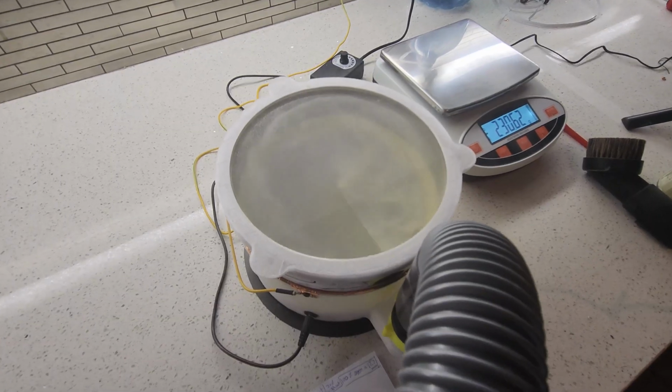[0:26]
Lab equipment is expensive, often way too expensive. What if I told you that one of the most powerful particle size analysis tools can be 3D printed for a fraction of its market cost?
Today I'm showcasing my Airjet Sieve design, an affordable and accessible way to classify and analyze fine powders in the lab. Whether you've never heard of particle size analysis or you're actively searching for a solution, this video is a great example of looking at an old product through the lens of a new manufacturing technique.
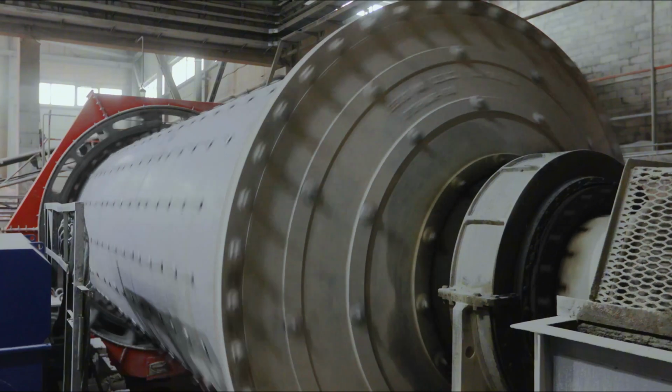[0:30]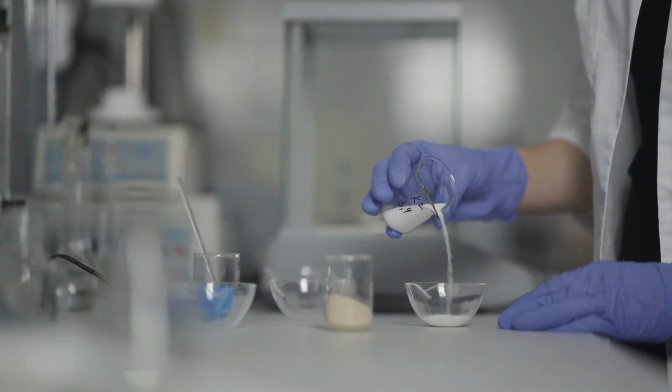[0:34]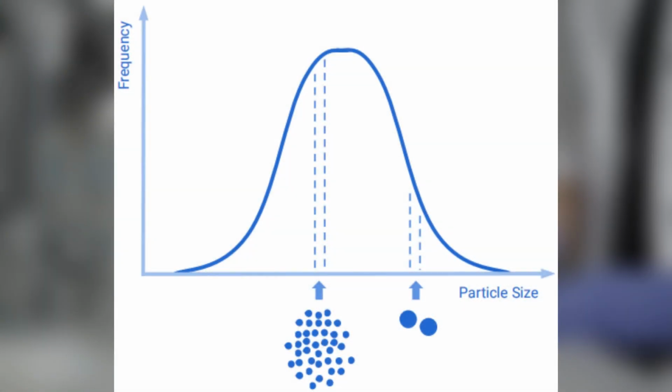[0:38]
So what is particle size analysis? Whenever a material is ground into a powder, it doesn't break down into uniform particles. Instead, grinding produces a range of particle sizes, from larger fragments to fine dust. Particle size analysis is the process of measuring the size distribution in the lab to ensure that the final product
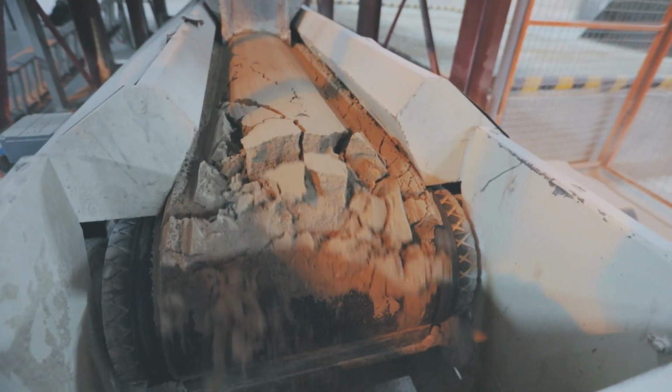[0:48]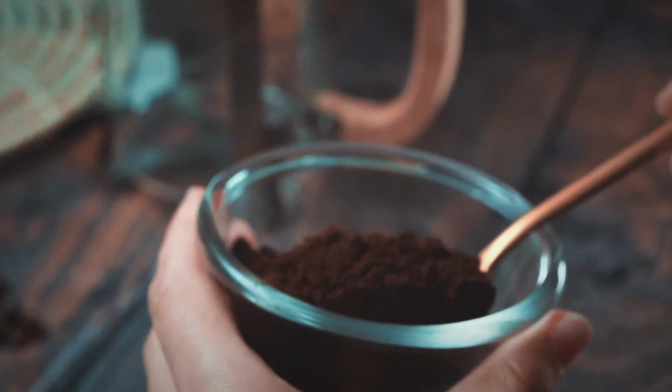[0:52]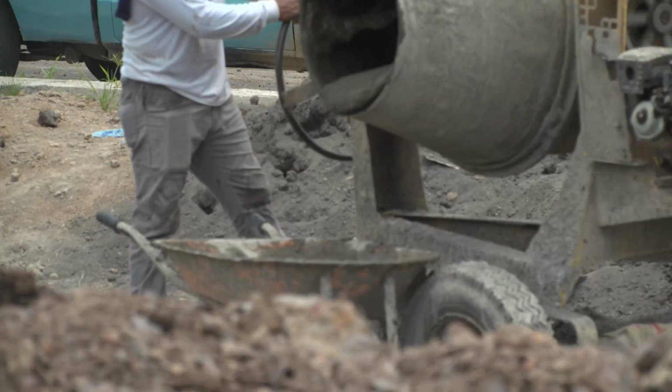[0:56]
meets specific requirements. A powder's particle size and variation significantly impacts the material's overall performance. It ensures that every cup of instant coffee you've ever had tasted the way it did, and that every bag of cement will provide the same performance.
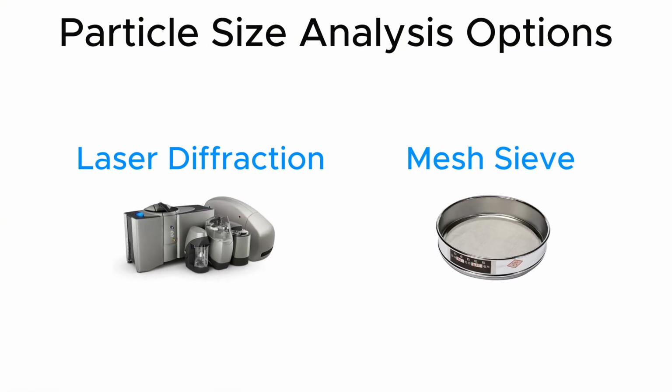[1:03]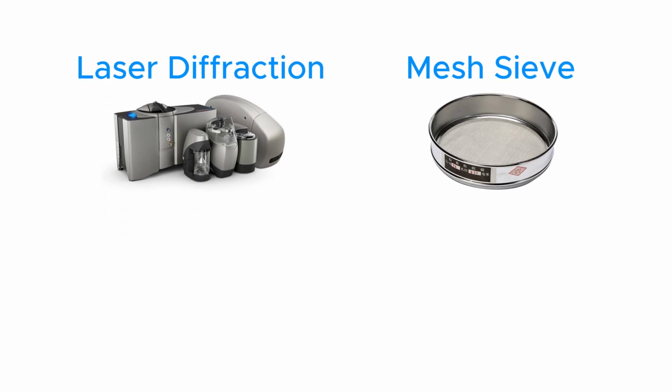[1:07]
There are two main approaches to particle size analysis: sieve-based methods and laser diffraction analysis. Laser diffraction instruments are highly accurate and can measure a wide range of particle sizes, but they're extremely expensive compared to sieve-based methods, ranging from $30,000 to $100,000. Sieve-based methods provide a more affordable and widely used alternative.
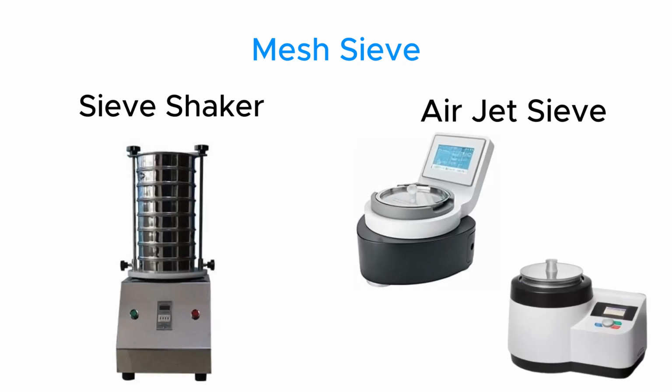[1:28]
Within sieve-based methods, there are two primary options: vibratory sieving and airjet sieving. Vibratory sieves rely on mechanical shaking to pass particles through a stack of progressively finer mesh sieves, making them well suited for coarser materials typically above 50 microns. For powders that include ultra-fine particles, they tend to clog the mesh, reducing efficiency and resulting in inaccurate results.
Airjet sieves, on the other hand, use a high-velocity airstream to fluidize and separate particles, making them ideal for very fine powders, even down to a few microns, while preventing clogging. Traditional airjet sieves start at around $10,000, but with my 3D printed design, this technology becomes significantly more accessible for researchers and even small scale manufacturers.
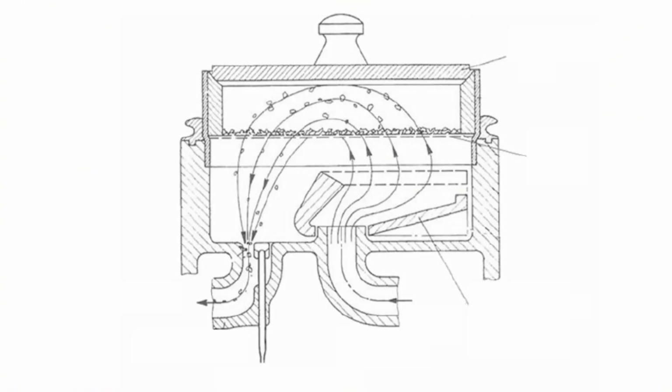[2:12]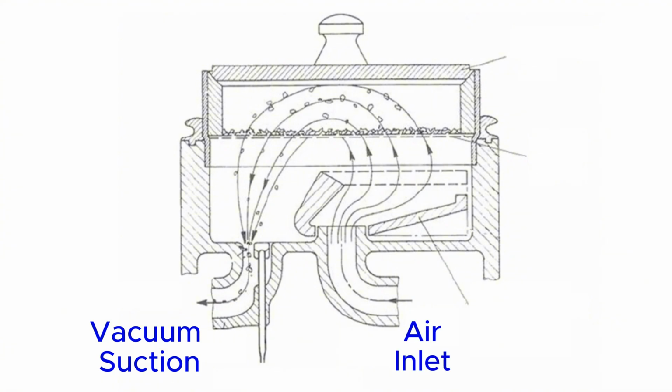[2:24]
Next, let's look at a cross section of an airjet sieve to understand how they work. On one side, you have a vacuum suction port, which hooks up to a vacuum cleaner to provide the driving force that pulls particles smaller than the sieve mesh through it. On the other side, you have the air inlet, where all the air being drawn by the vacuum enters the system. Right above the air inlet, you have the rotating wand.
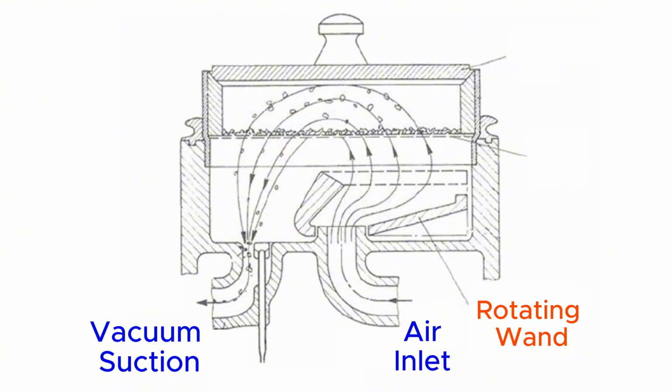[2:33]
The rotating wand works by forcing all the air coming through the inlet into a thin slit, creating an air blade. This air blade is positioned right below the sieve, and as it rotates, it clears up any particles clogging the sieve. It launches the particles at the lid, which breaks down any agglomeration. This gives particles smaller than the mesh multiple opportunities to pass through.
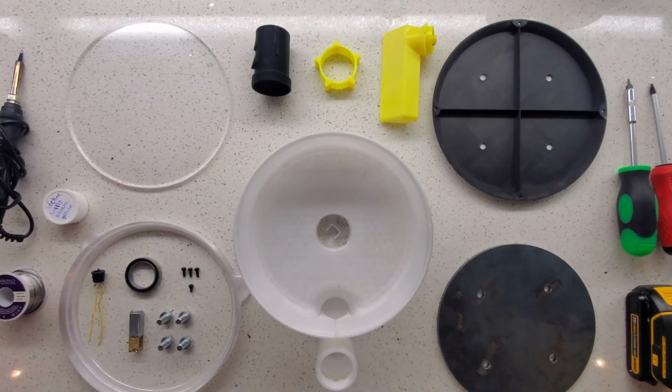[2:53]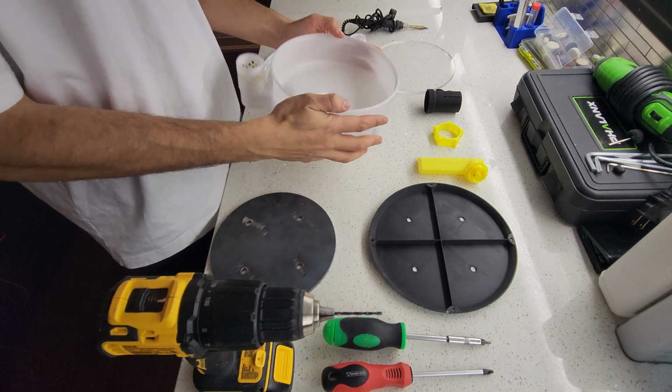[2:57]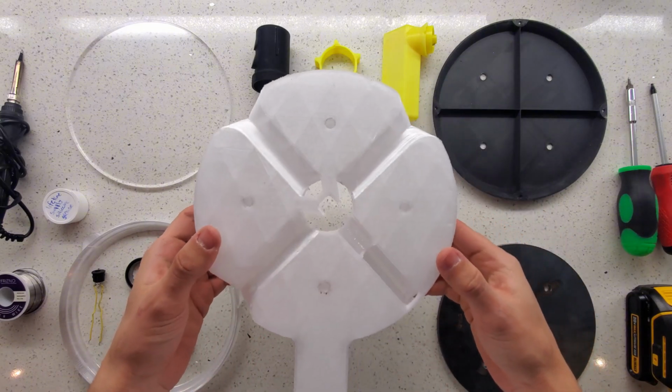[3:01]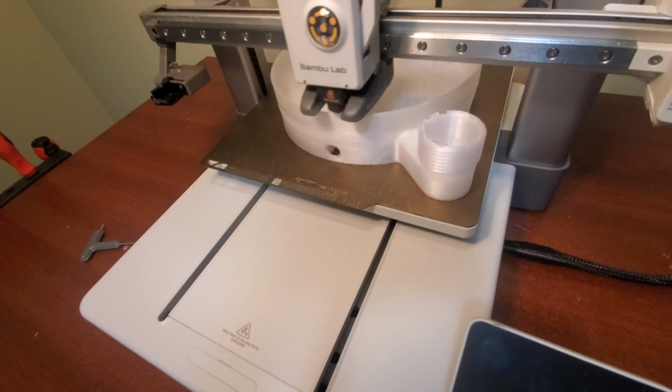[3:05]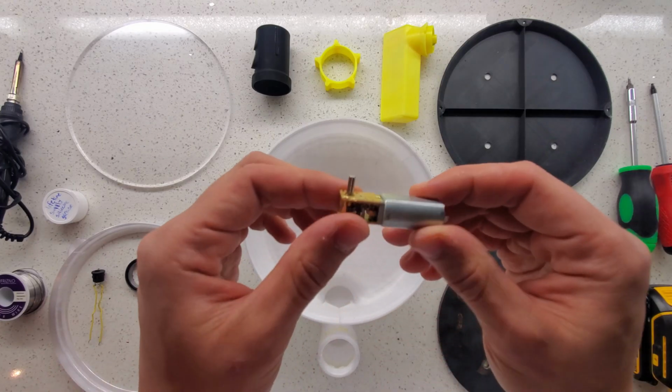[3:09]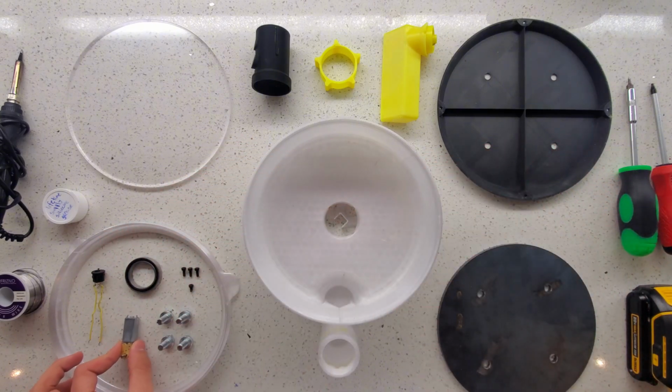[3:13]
Let's get into the build. These are the components and tools I used to make the airjet sieve. This is the main body of the device. I'll get into its features in a second. Most functional components were 3D printed on a hobby level Bambu A1 printer. At the heart of the unit is a micro N50 motor with a gearbox outputting between 50 to 200 RPM. The centering bearing keeps the wand in place.
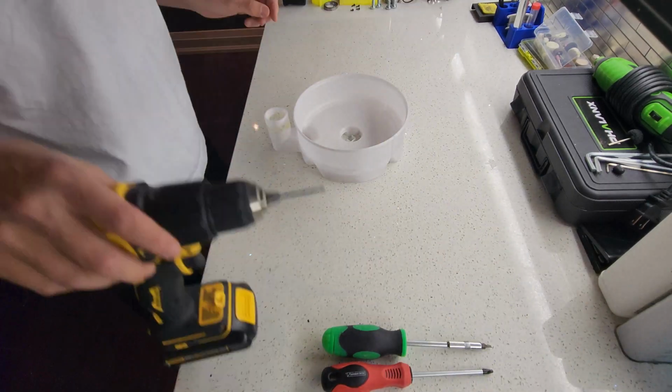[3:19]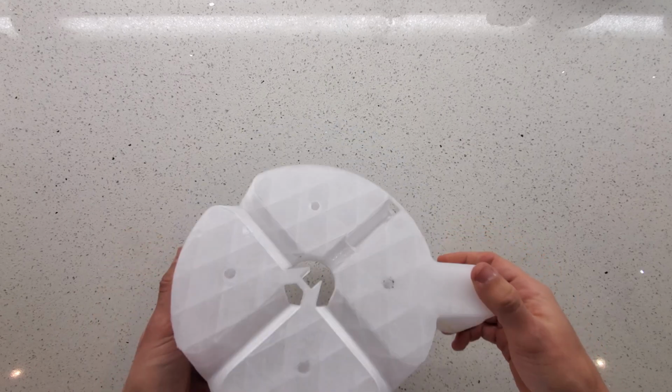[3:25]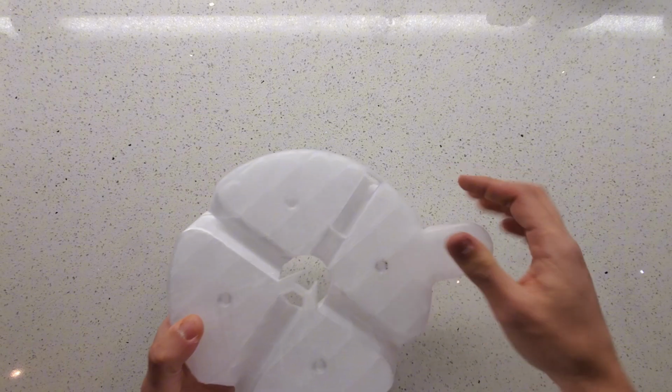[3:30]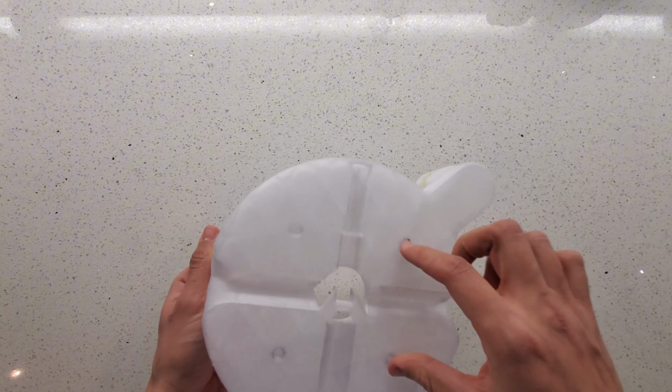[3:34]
Taking a closer look at the main body of the unit, you'll notice it has many features on the bottom side. It was designed to be printed without any support material. This section keeps the motor in place with a channel leading to an electrical port. These four threaded holes accommodate M8 bolts that keep the base on, securing the motor and its wiring.
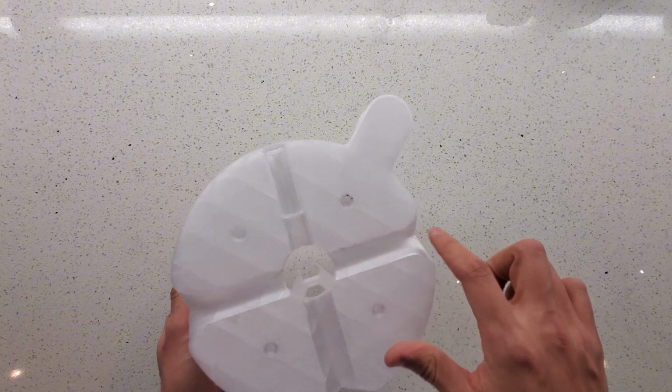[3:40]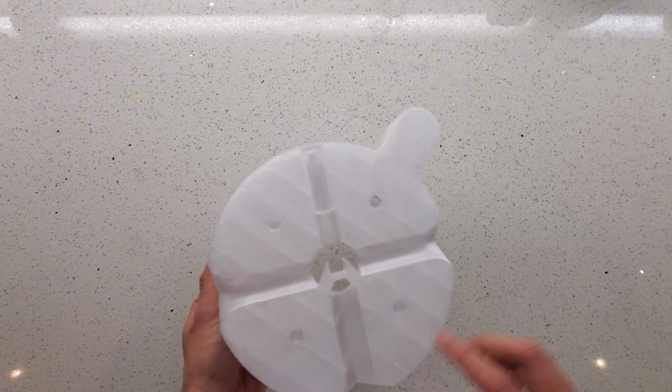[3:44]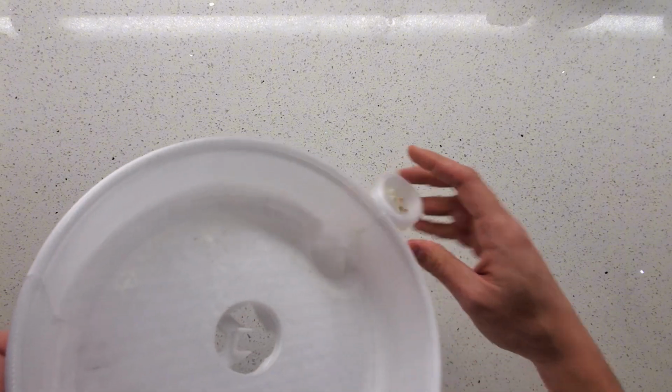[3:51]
These three ports are all air inlet ports. Instead of making one large inlet port, I divided the area into three to reduce the unit's height and required material. On the outside here is a vacuum port with some bypass holes. I'll talk about that in a bit.
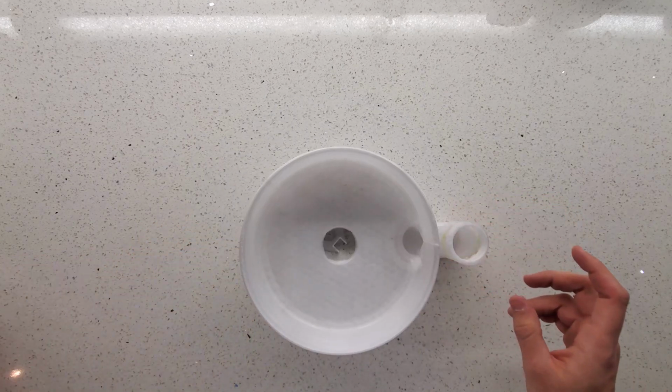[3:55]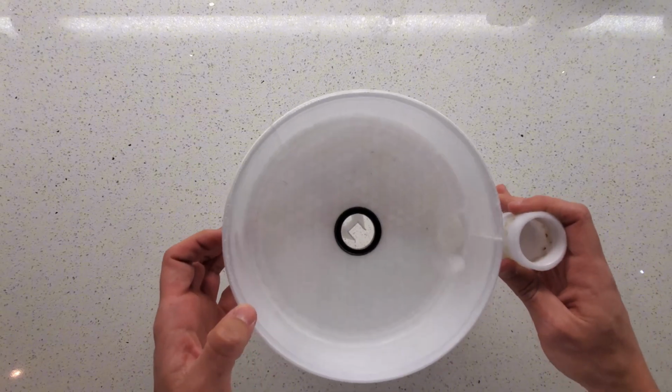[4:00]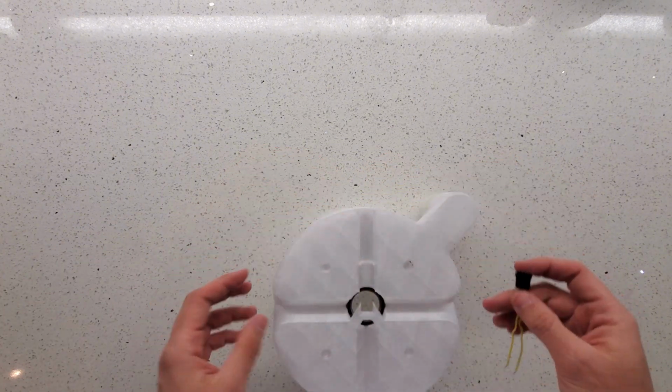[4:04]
I begin the assembly by popping the bearing into place. Next, I attach the DC power socket with its pre-soldered wires into place.
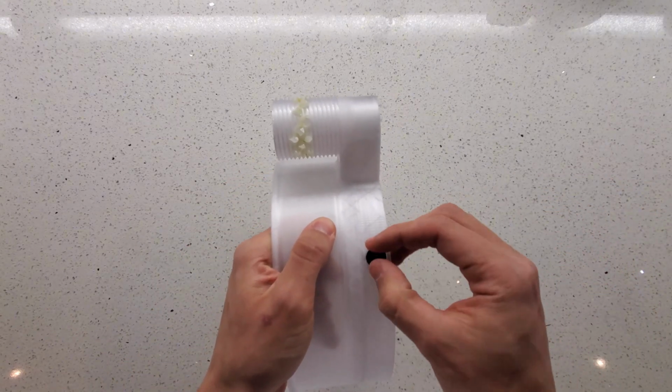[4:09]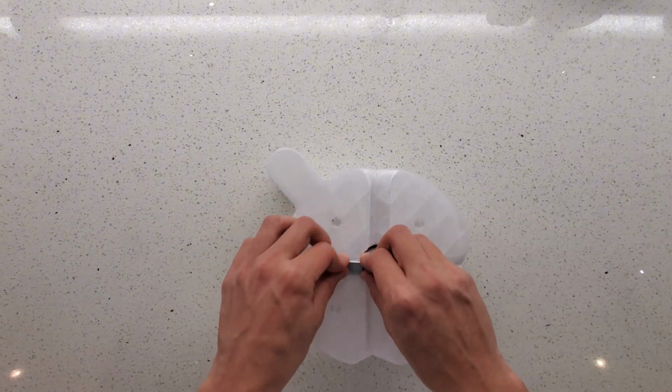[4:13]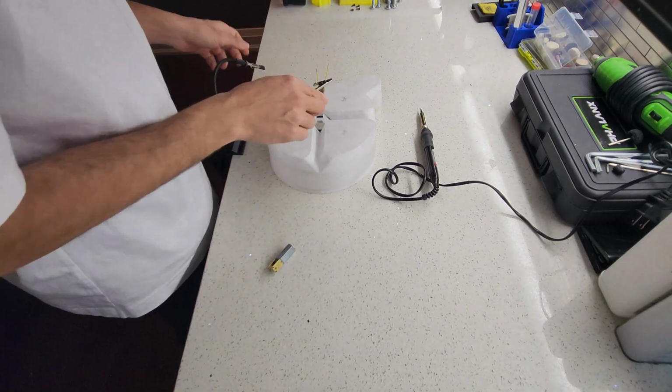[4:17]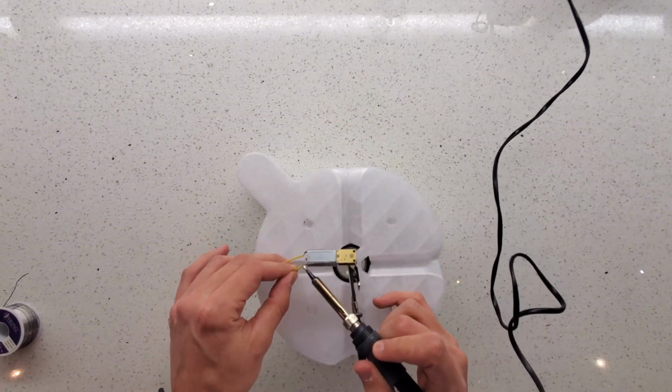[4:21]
The soldering iron was then preheated and the motor's terminals were soldered onto the connector's wires. Polarity doesn't matter here, the motor can spin in either direction.
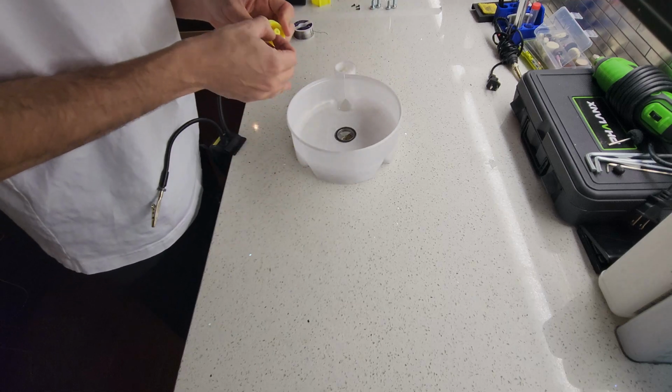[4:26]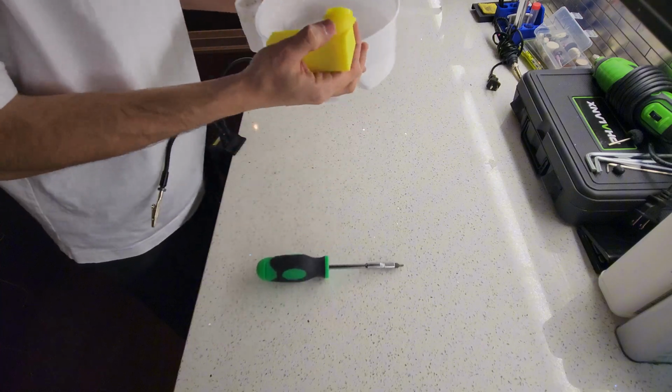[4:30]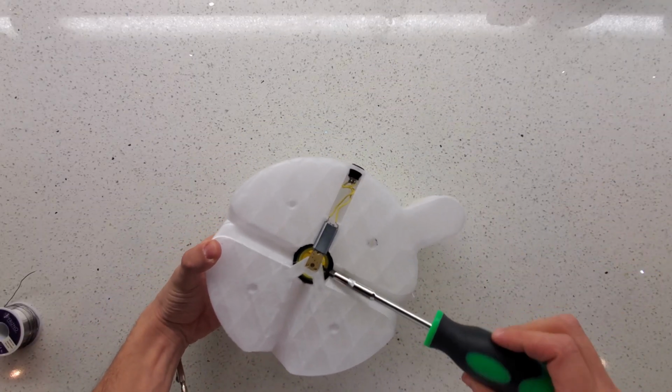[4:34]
After the motor was soldered, the wand is fitted in place from the top, but before I do that, I start threading the set screw that secures the wand to the motor shaft. I tighten the set screw from the bottom, and now I can move on to the base assembly.
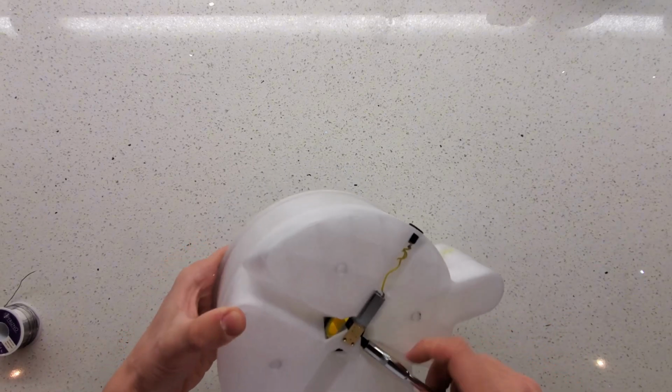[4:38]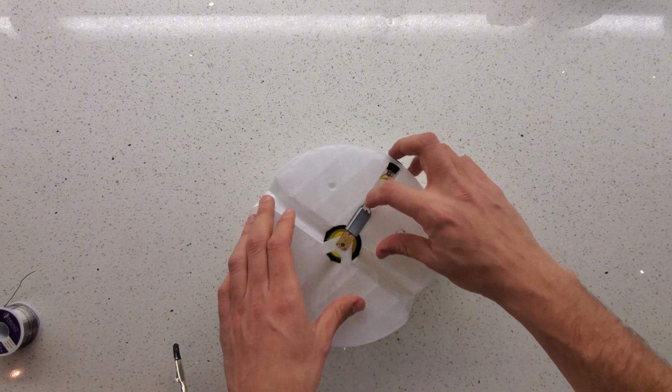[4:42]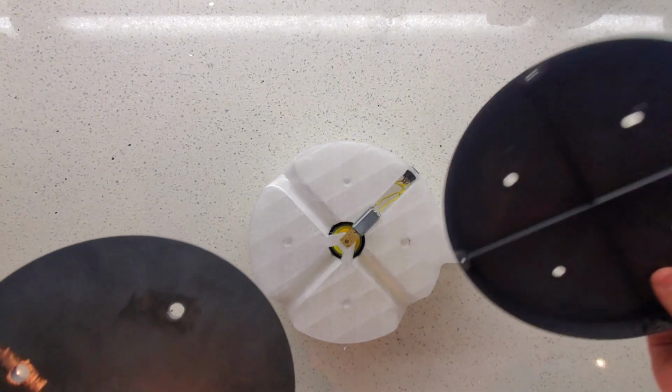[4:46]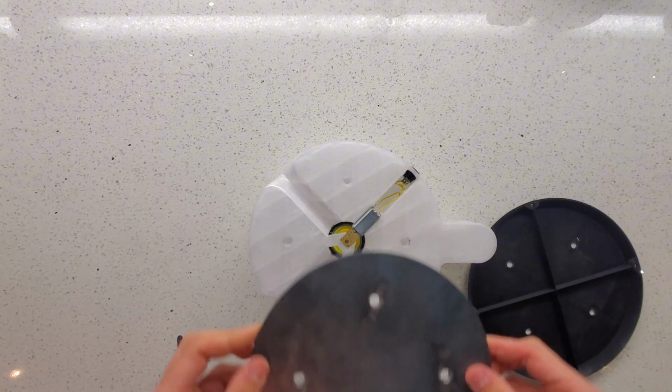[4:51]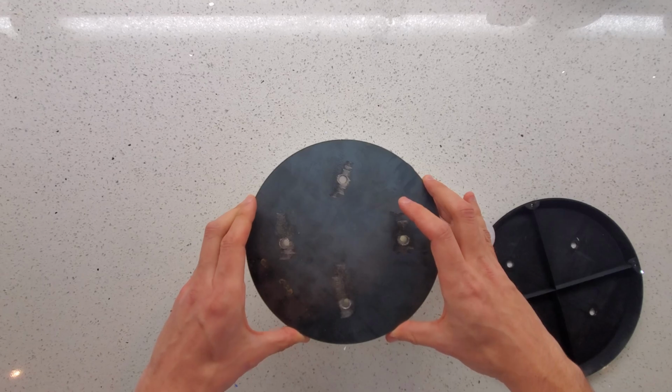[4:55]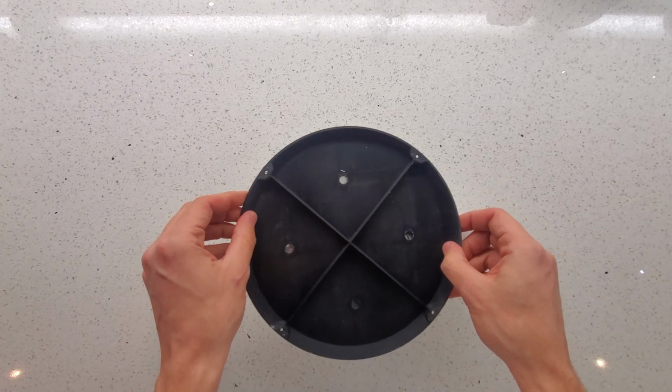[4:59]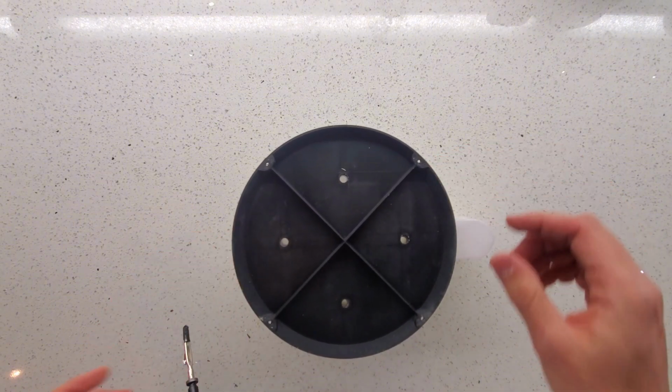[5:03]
For the base, I have two components. On the left is an optional laser cut 5mm sheet of metal. Its purpose is to add weight to the final assembly, keeping it secure on the table with everything moving inside. On the right side is a printed component that can be used as a standalone base and has additional mounting points to secure the unit to a piece of wood or a table if you don't have access to the laser cut component.
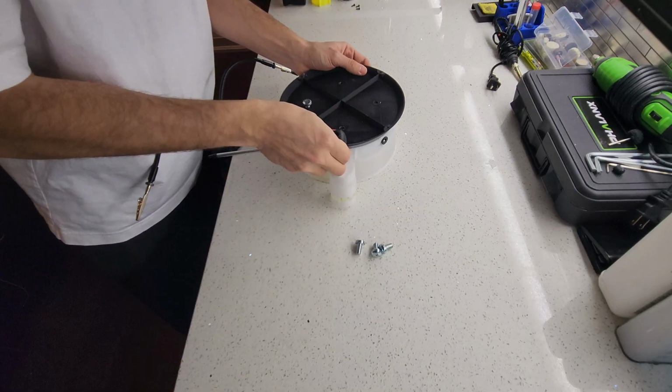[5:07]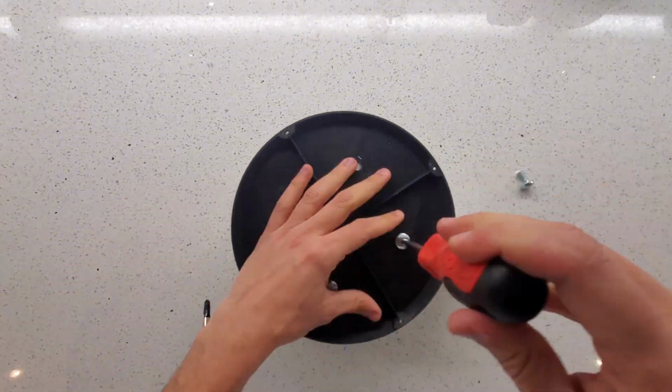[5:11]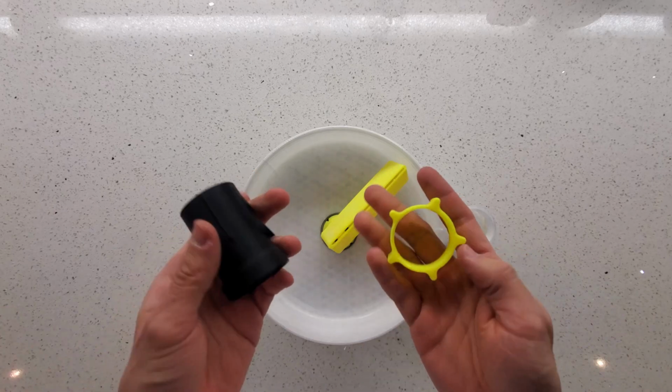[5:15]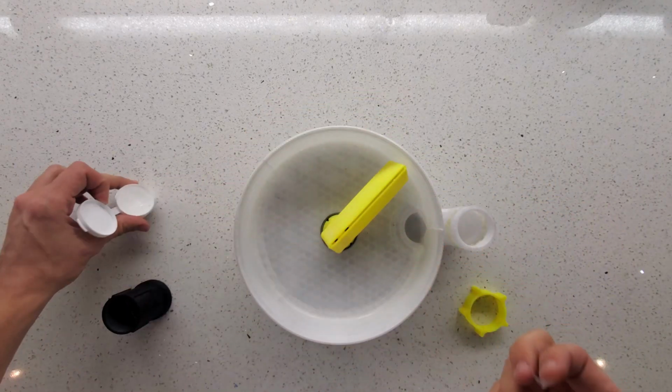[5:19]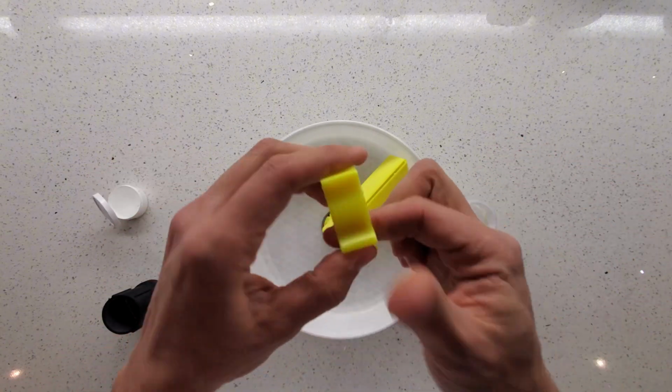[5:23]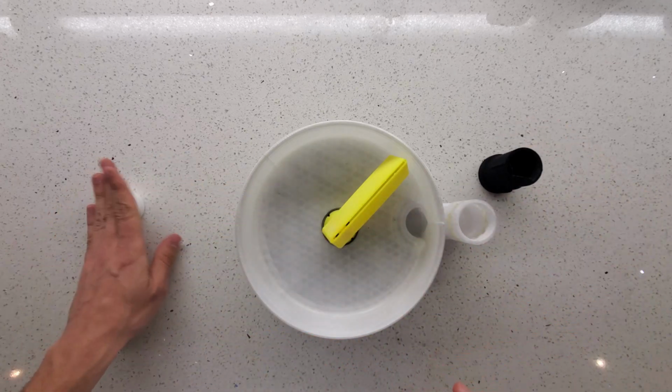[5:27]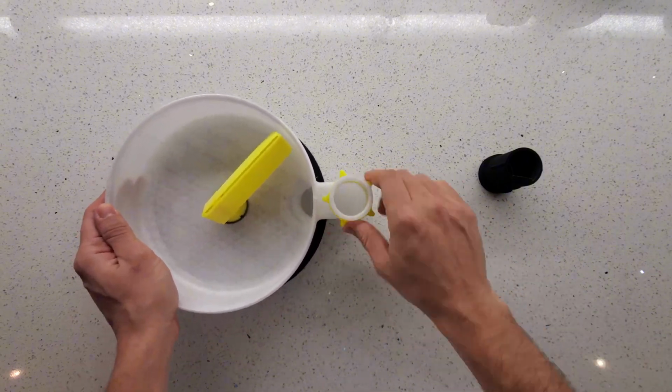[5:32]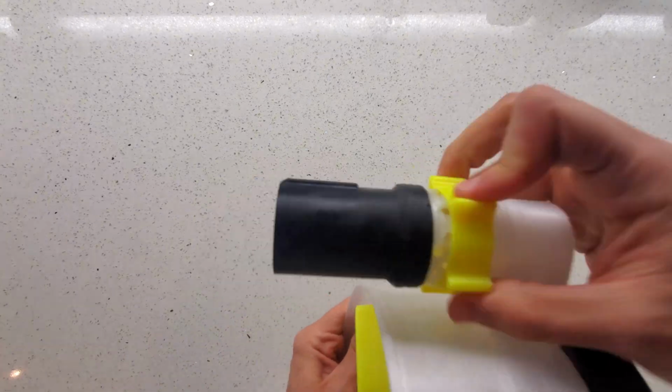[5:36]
These attachments go on the vacuum port. The yellow one is to manually control the vacuum bypass holes, and the black component is a quick release fitting for the vacuum of my choice. Add some silicone grease to the thread to make it easier to thread the components, a useful hack for any 3D printed thread. Any vacuum adapter can be made to thread on similarly to use a different vacuum cleaner model.
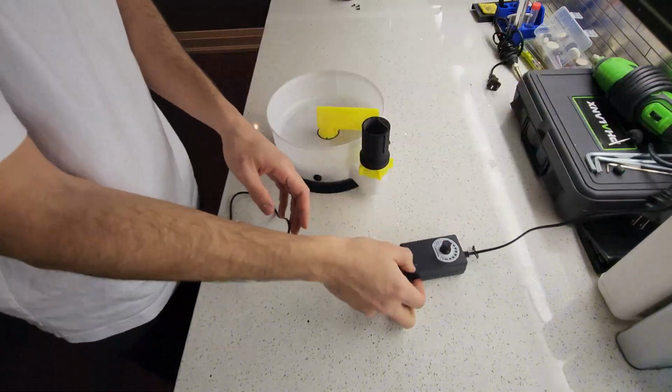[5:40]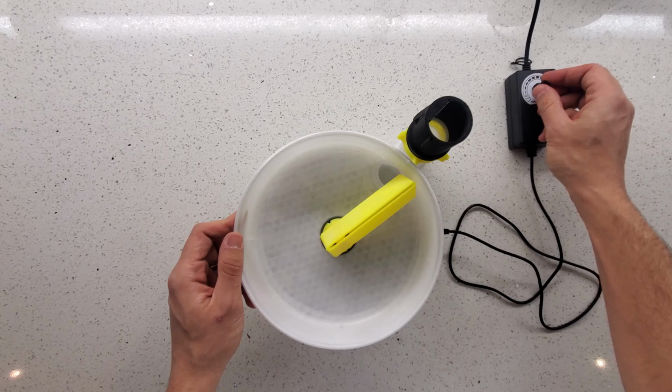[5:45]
For simple motor speed control, I chose to use a variable 12-volt DC power supply. Can be used to visually change the rotational speed of the wand.
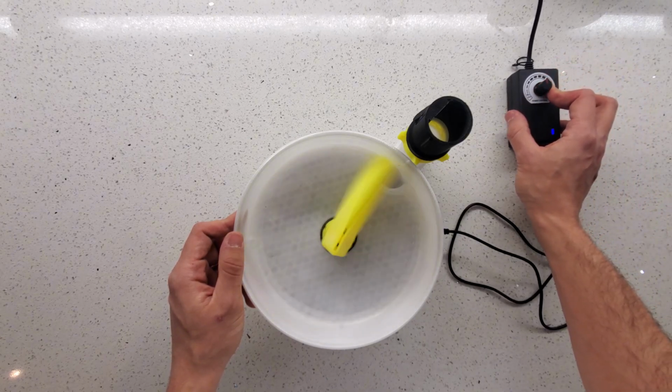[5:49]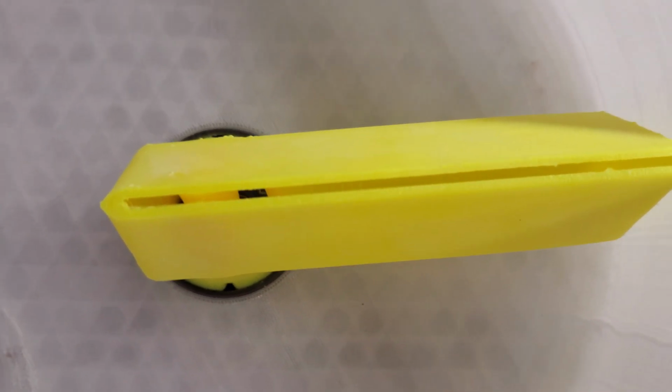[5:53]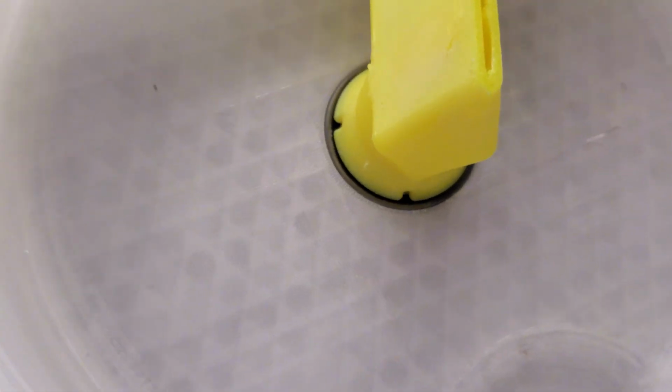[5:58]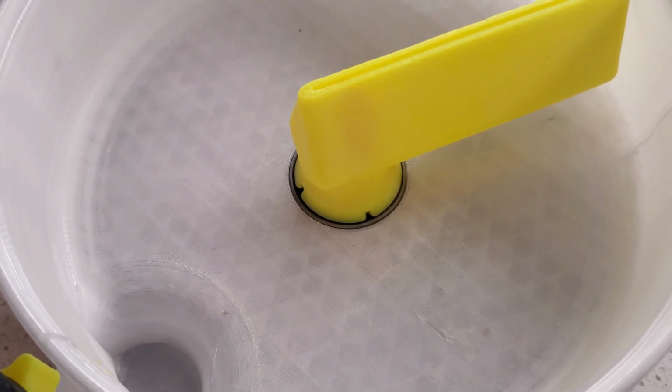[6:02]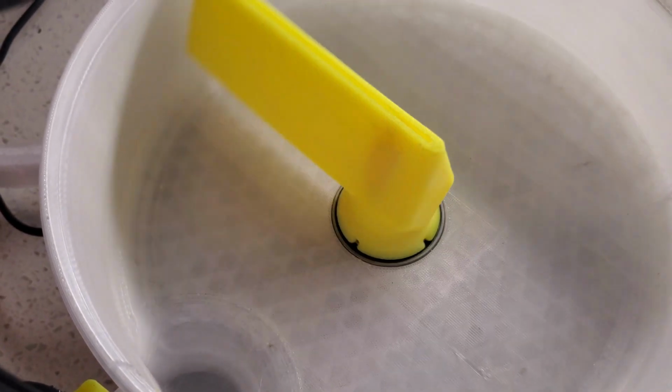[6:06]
Taking a closer look at the wand, you'll see the thin slit at the top. You'll also see four small holes right above the bearing. Similar to the slit, some of the air being drawn by the vacuum is diverted into these holes, and as the wand rotates, they blow out the powder sitting on the bearing to keep it clean.
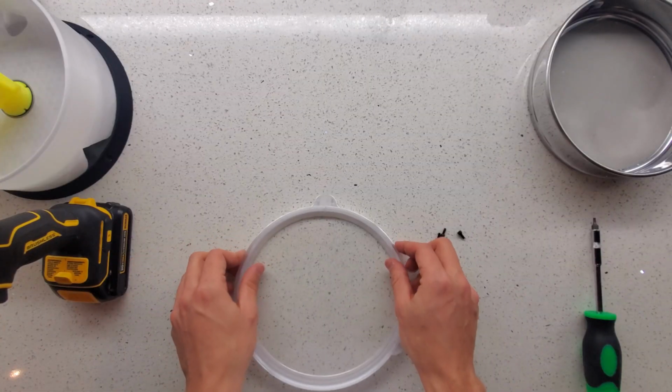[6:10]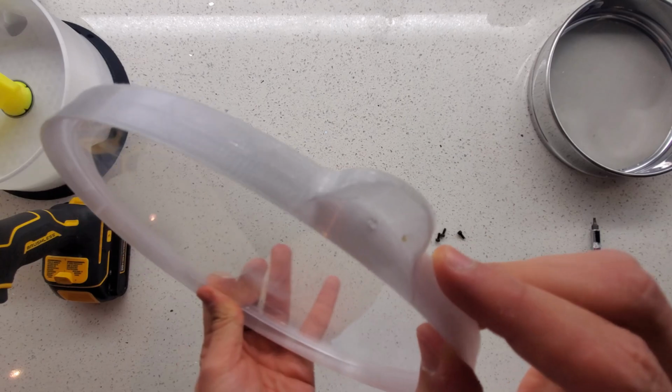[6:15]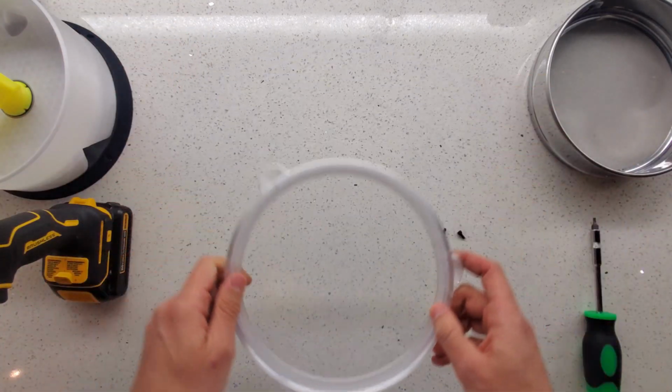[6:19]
Making the lid requires using a standard drill bit to make holes for the three M3 bolts. The 3D printed centering ring has holes under each of the three handles acting as drill guides.
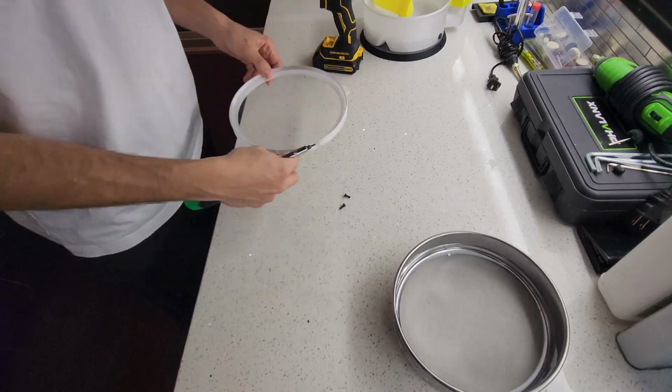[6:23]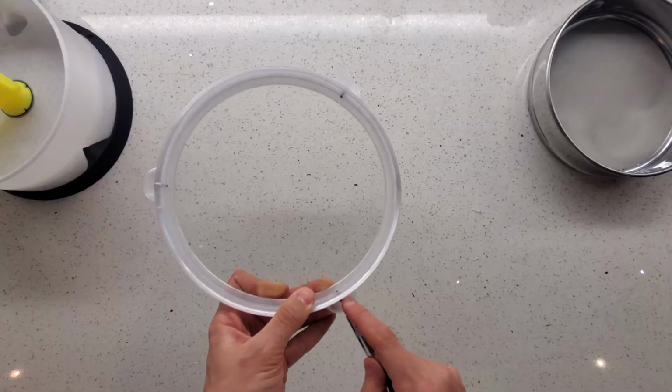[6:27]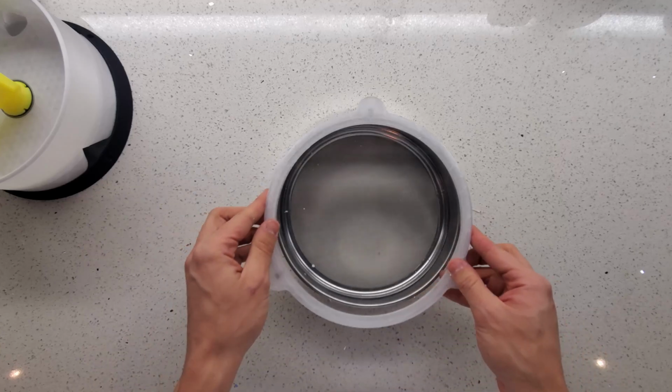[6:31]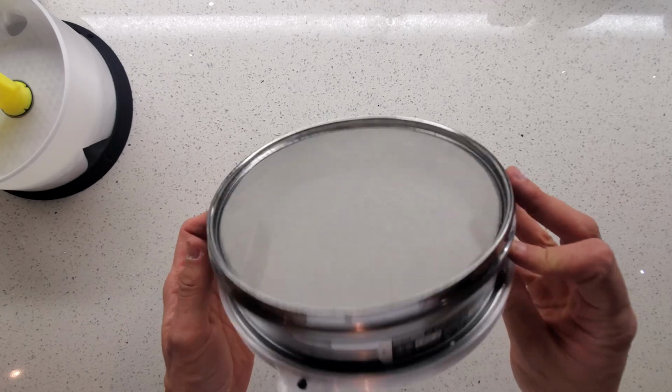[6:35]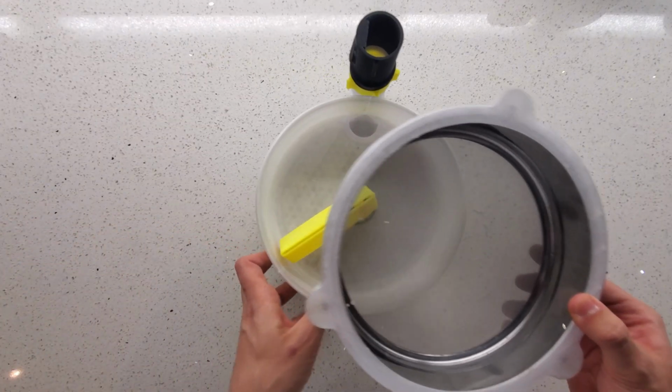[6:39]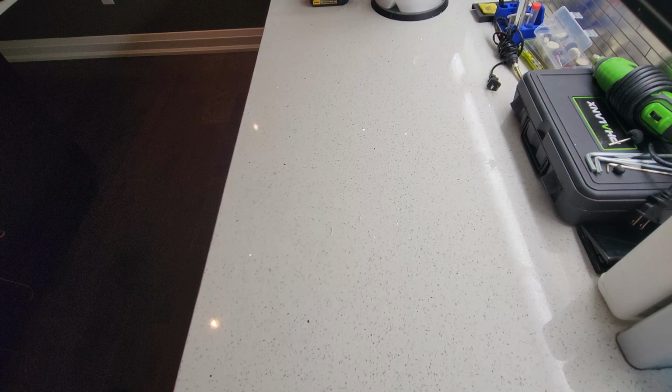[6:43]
The lid just pops on and off of a standard 200mm diameter sieve. The sieve itself pops into place onto the main body. For my vacuum of choice, I decided to use a Dyson Big Ball.
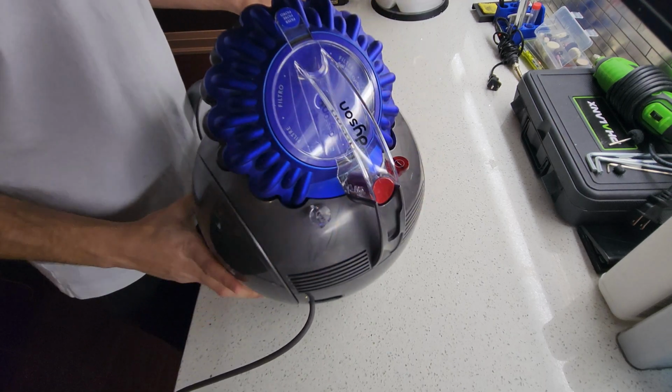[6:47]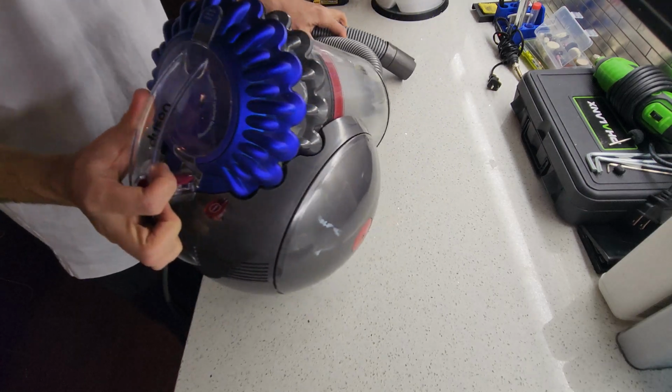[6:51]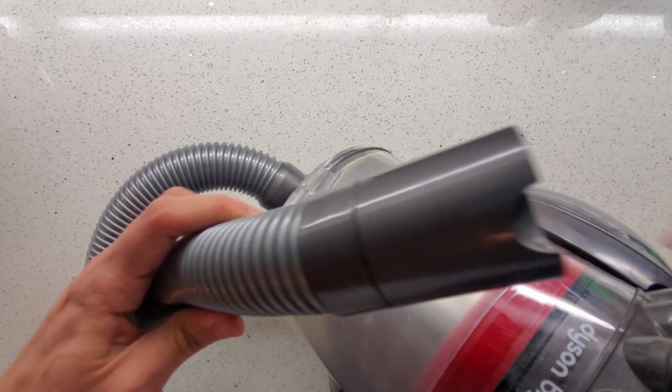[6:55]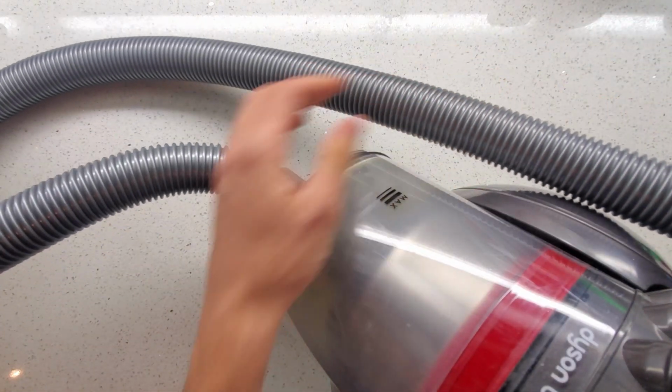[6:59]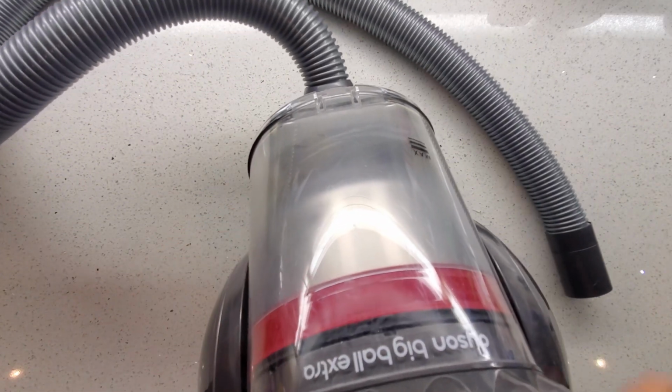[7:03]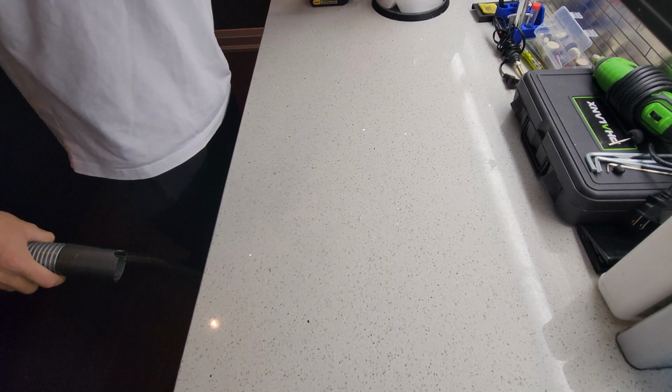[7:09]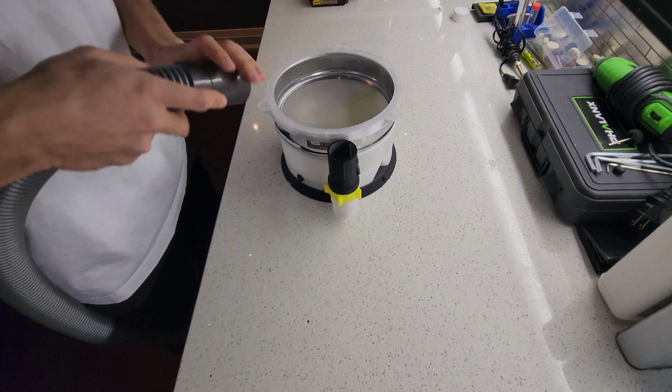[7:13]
The main benefit being that using a Dyson vacuum or similar units with an integrated cyclone ensures that we have constant suction. Filter bag vacuums lose their suction the dirtier they get. Commercial Airjet sieves have additional separate cyclone attachments that can be utilized to use a standard filter vacuum cleaner. A similar approach can be used there, but with more vacuums having built-in cyclones, it's unnecessary. The fitting I showed earlier snaps onto this vacuum tube directly.
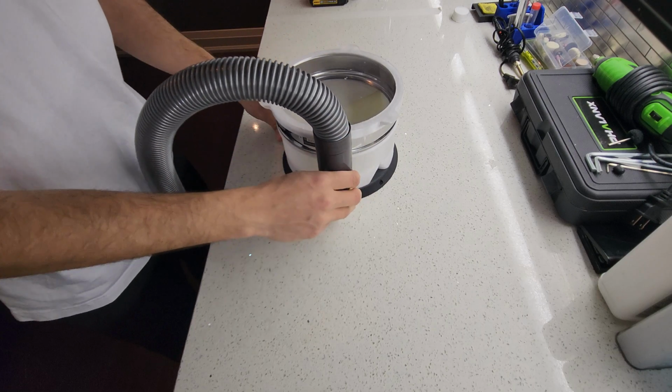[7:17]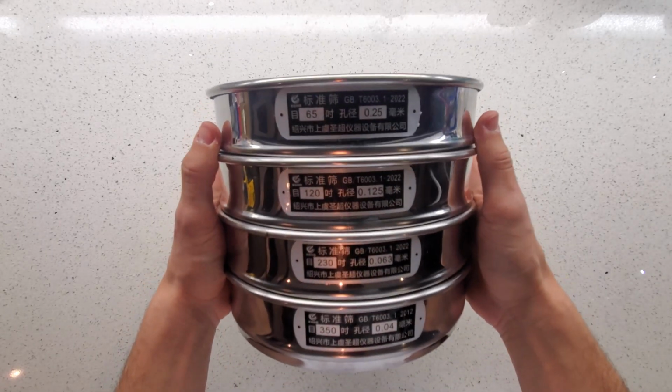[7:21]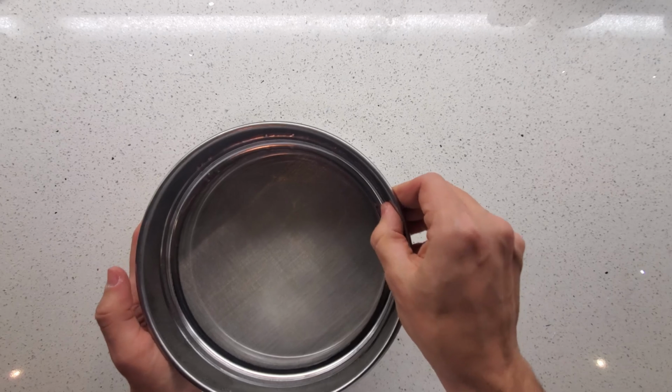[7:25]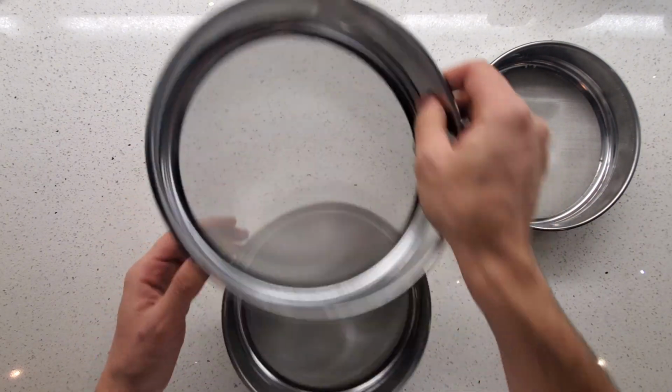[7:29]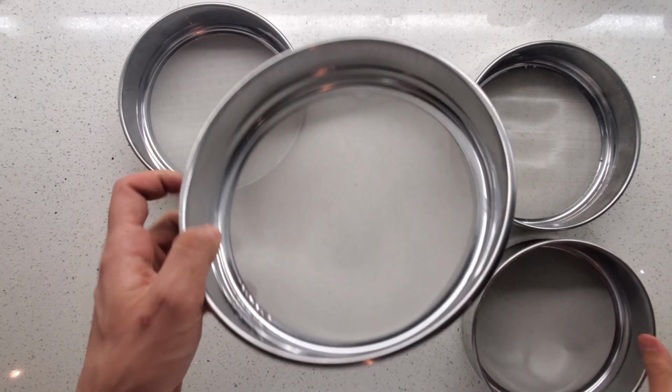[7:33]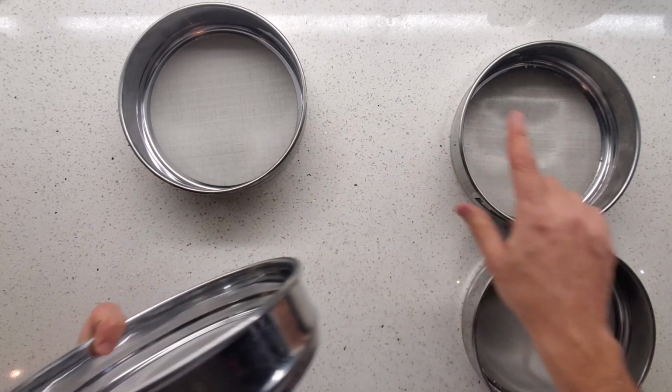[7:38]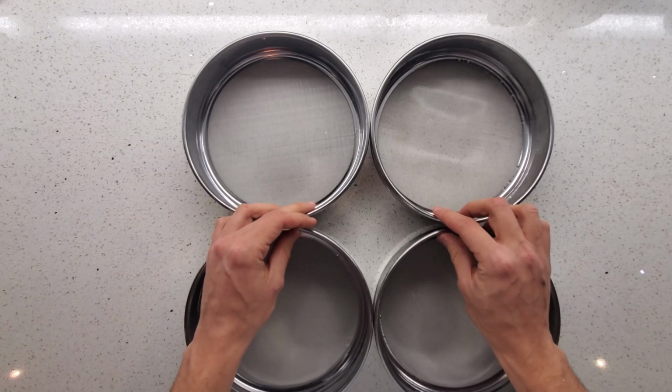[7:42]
The sieves I'm using in this video are straight from China off of AliExpress. They're not ideal for Airjet sieve applications as they have an inner brim, but this whole stack of sieves cost less than an individual sieve purchased from the North American vendors. Sufficient for testing, and since they're a standard 200mm size, it is straightforward to make minor modifications to the unit to accommodate higher quality sieves later on.
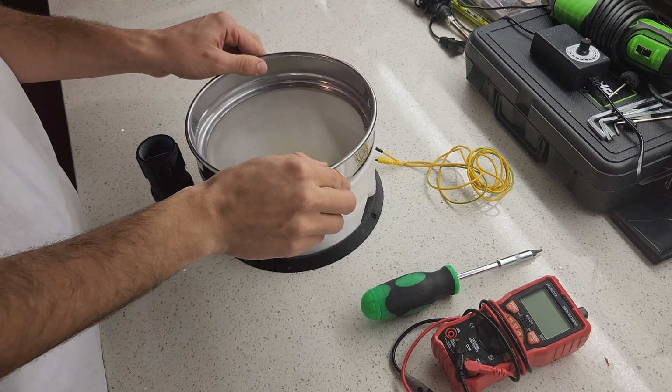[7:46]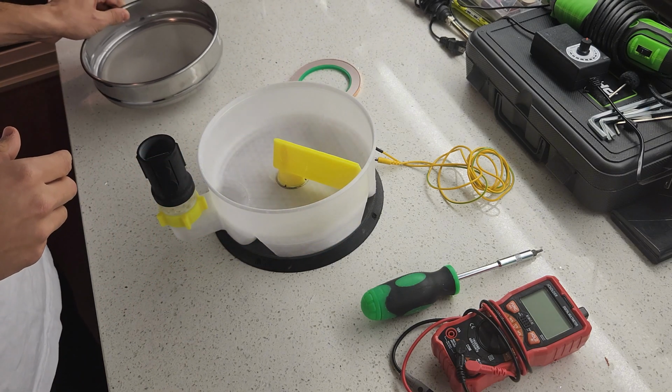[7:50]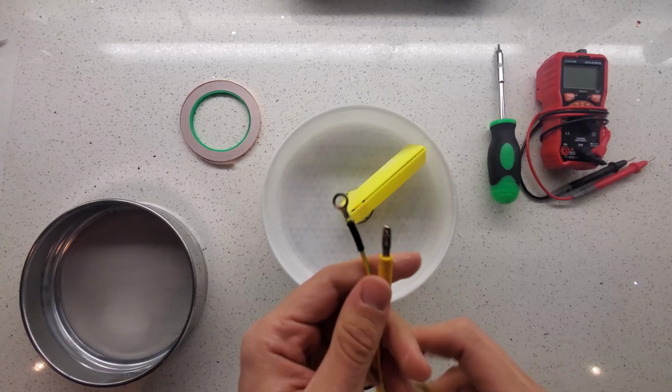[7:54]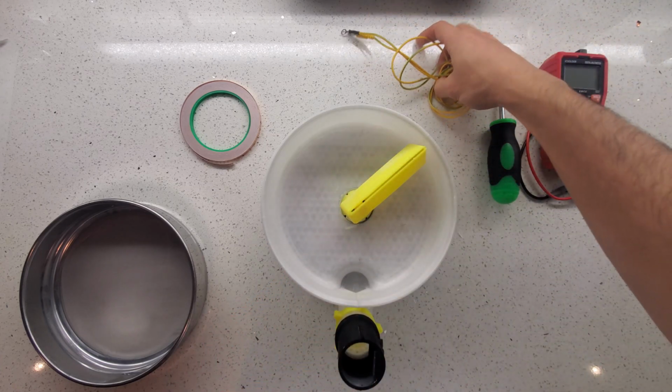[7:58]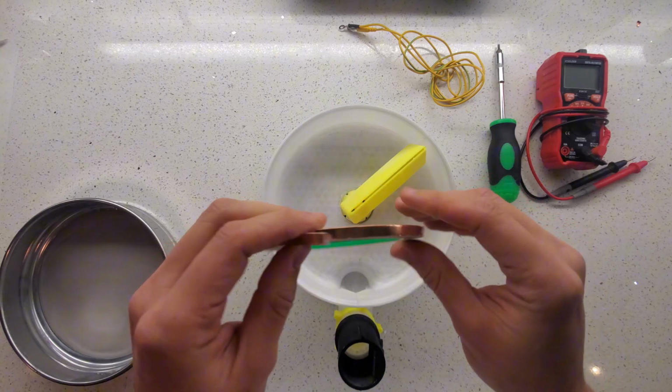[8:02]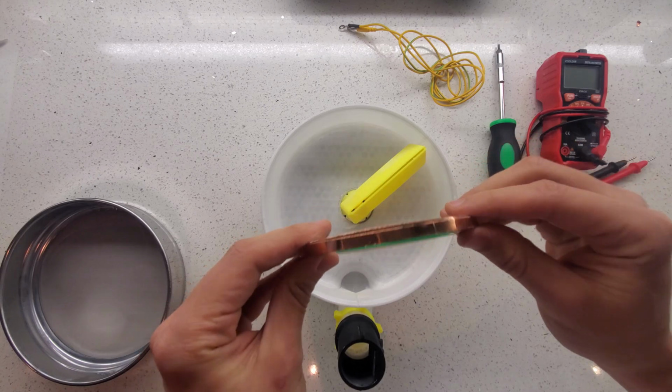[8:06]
This upcoming modification is a result of an issue I had during testing. When I ran the Airjet sieve with fine powder inside it, the fast-moving small particles built up high static charge on the metal sieve frame. To dissipate the static charge, I need to connect the sieve frame to ground using a grounding cable. I used conductive copper tape that was placed on the wall of the main body where the sieve frame sits to make the connection to any sieve placed on top.
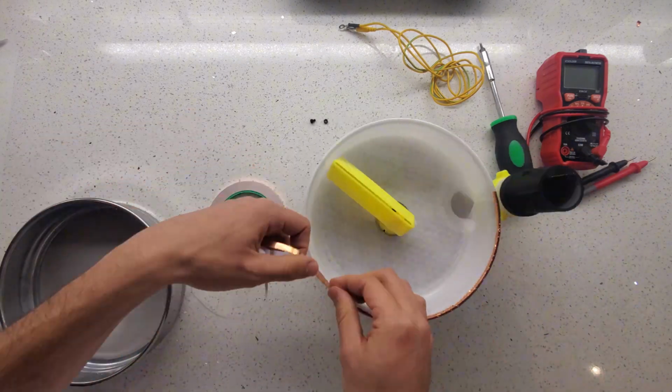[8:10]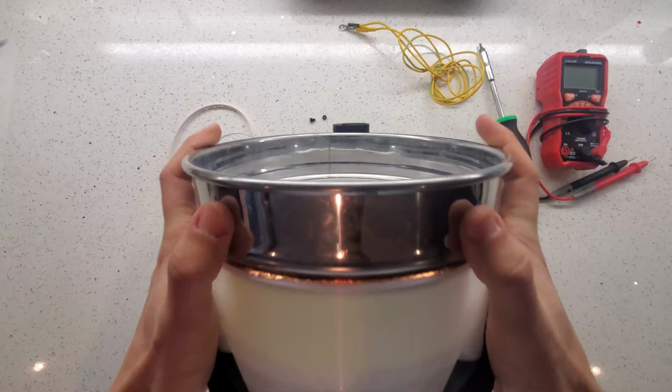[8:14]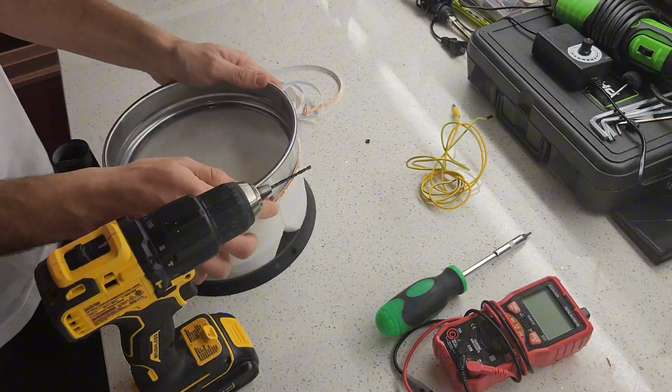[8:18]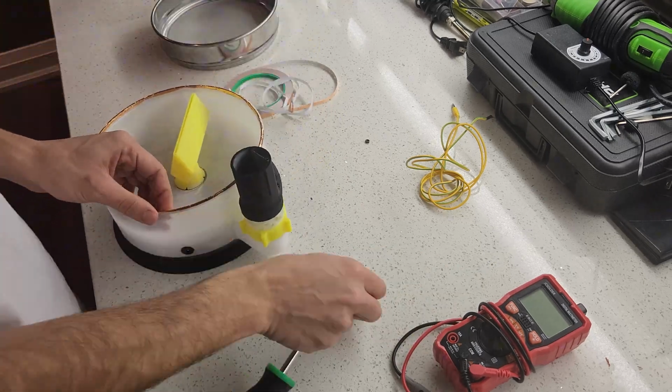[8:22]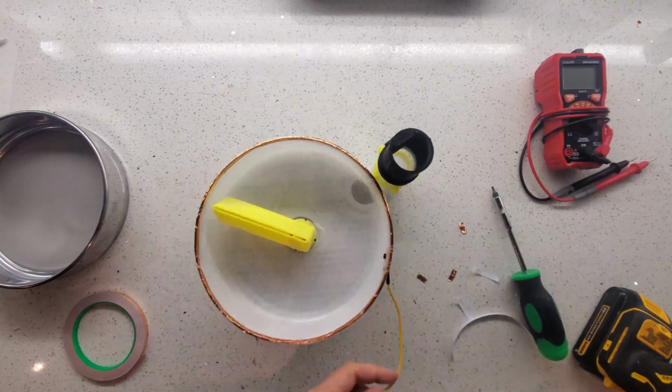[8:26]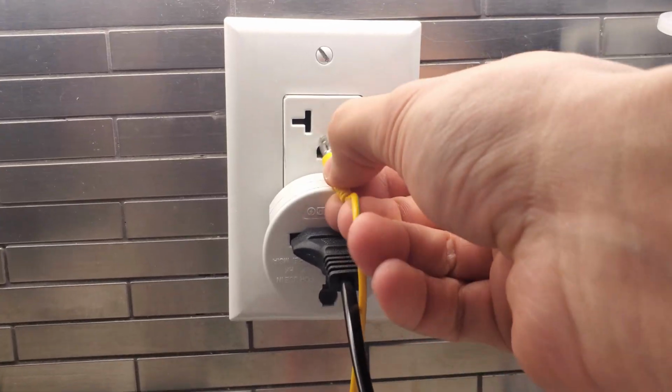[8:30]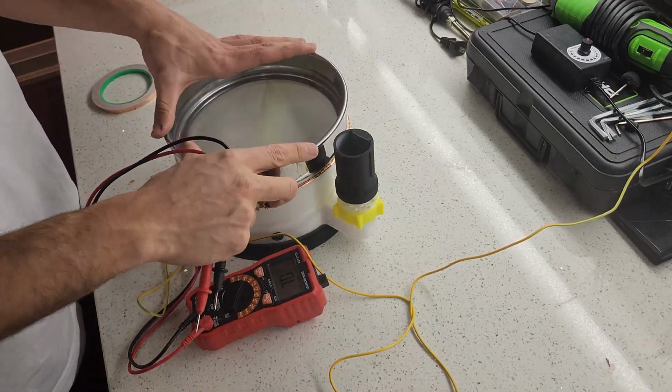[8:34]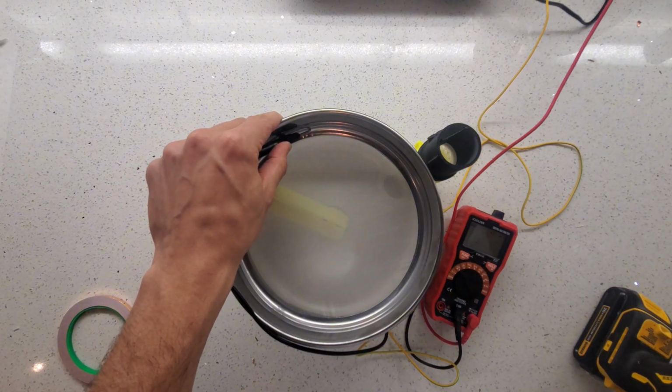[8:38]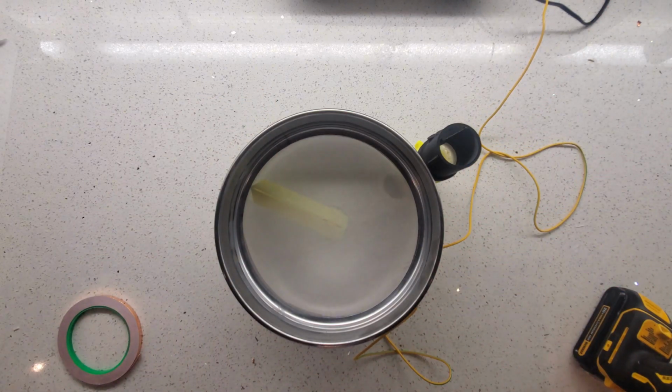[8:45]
To connect the conductive tape to the cable, I drilled a small hole for a short M3 bolt to secure the cable to the tape. Once the screw is tightened, the other end of the cable can be plugged into the earth port in the wall. To check that the grounding is working, I use a multimeter to measure the resistance from the sieve frame to another earth port. I measured it to be around 3 ohms, very good connection. This completely resolved the static issue in subsequent testing.
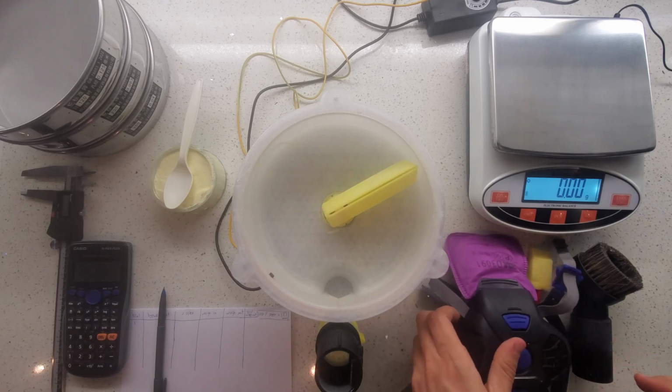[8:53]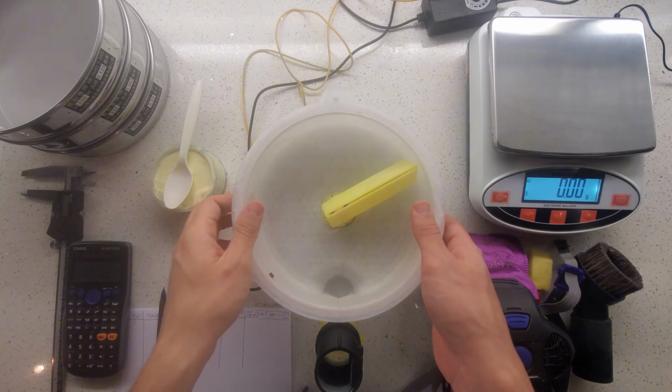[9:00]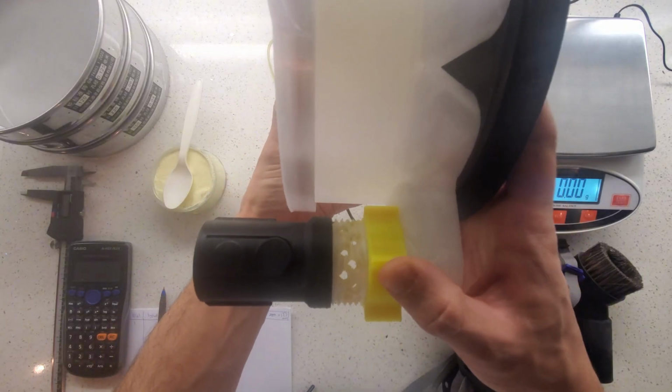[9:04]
Newer commercial Airjet sieves can accommodate various vacuum cleaner models by using a pressure sensor and throttling a valve on the suction port to achieve specific pressures from any vacuum cleaner. The alternative is to find the optimal pressure experimentally. This is done by testing the repeatability of the results at different suction settings.
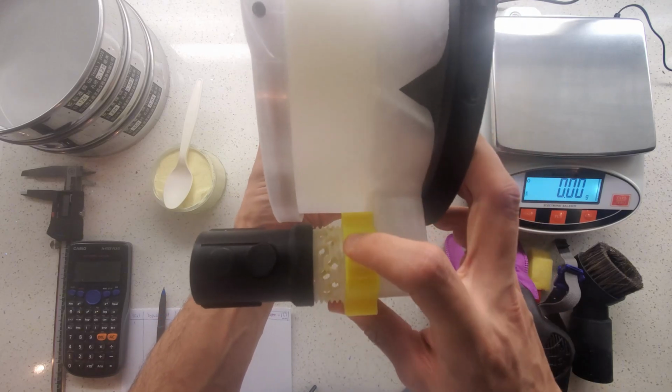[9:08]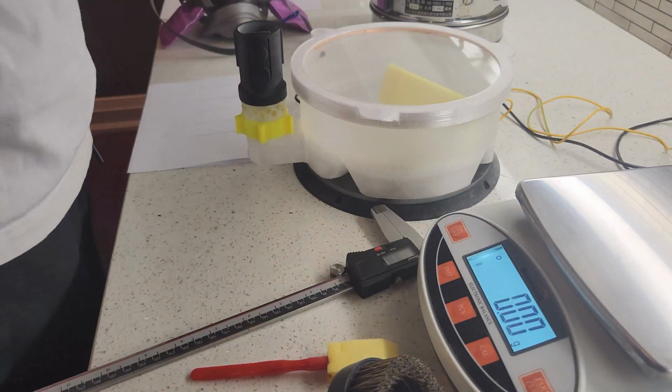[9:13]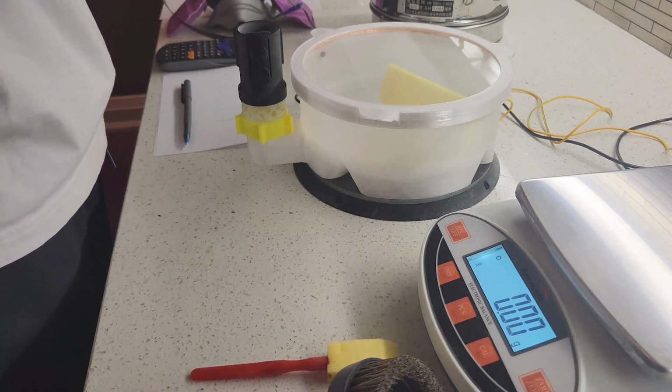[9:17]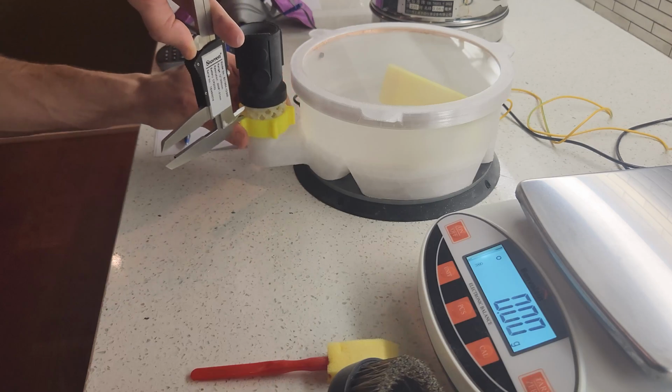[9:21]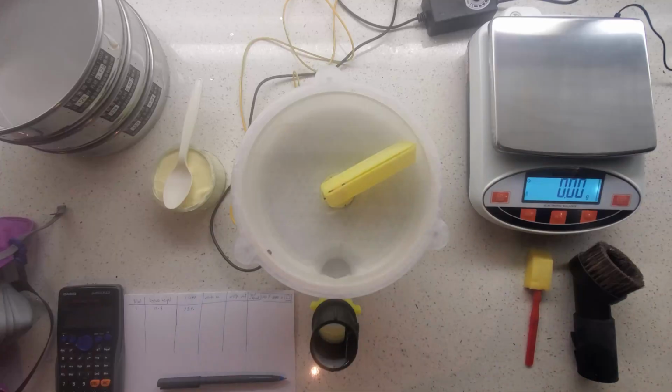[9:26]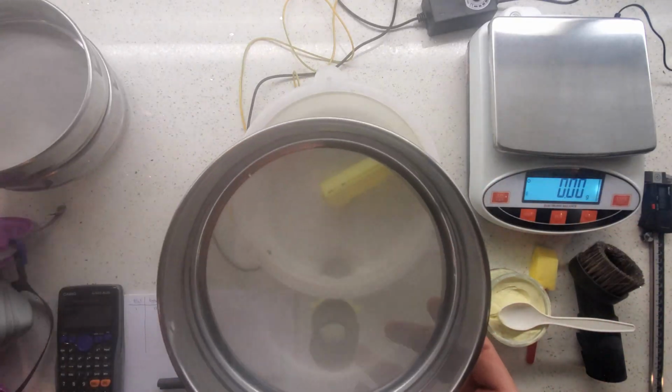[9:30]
Suction settings are set by positioning the yellow bypass fitting. I start by measuring the total bypass height between the yellow and black fittings with the bypass in the fully open position. This results in the lowest suction in the system. I then calculate the required height to achieve different bypass percentages. Here's the sequence of steps I follow to test one of the bypass settings.
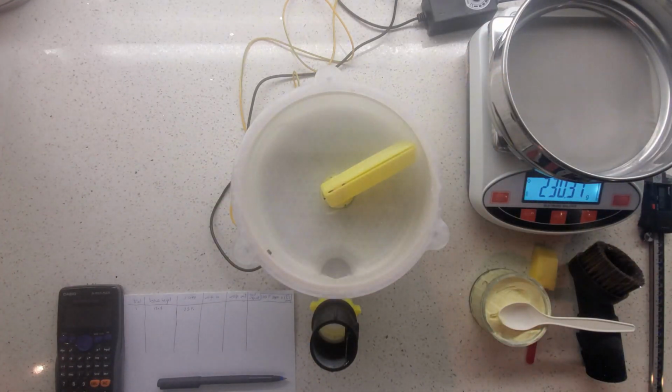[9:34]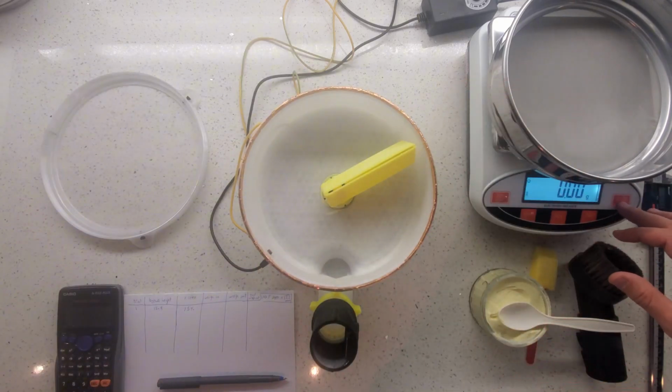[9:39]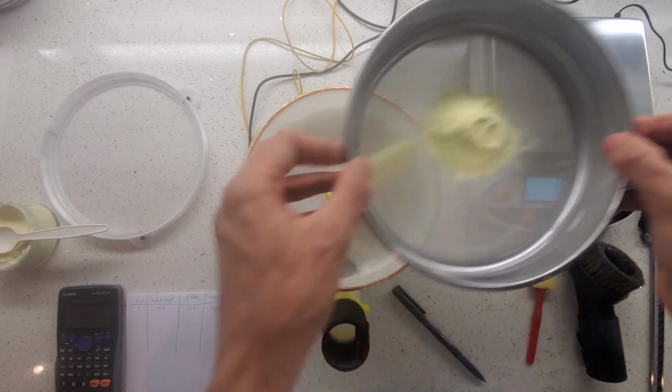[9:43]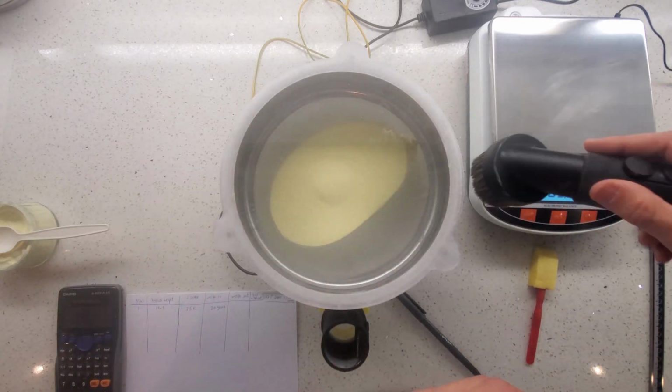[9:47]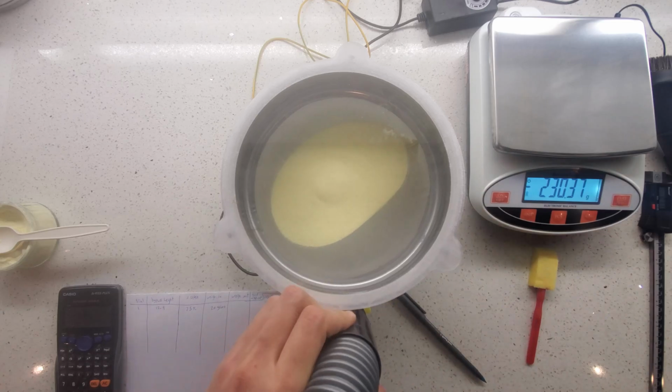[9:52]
Tare the scale with the sieve weight. Make sure to wear PPE for handling fine powders. Measure weight of testing samples. I use 20 gram samples. Place sieve on the Airjet and secure the lid. Clean off any powder that already fell through on the scale. Keep it tared to the empty sieve weight.
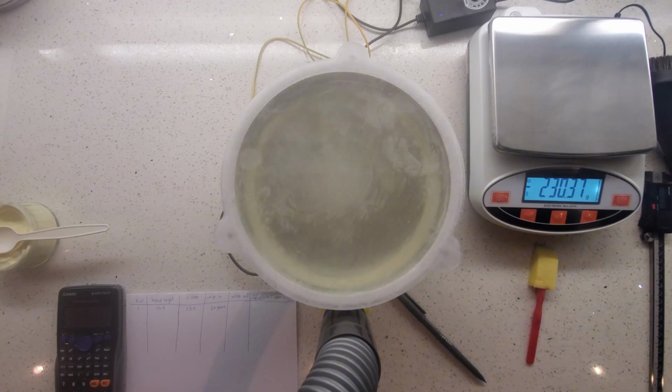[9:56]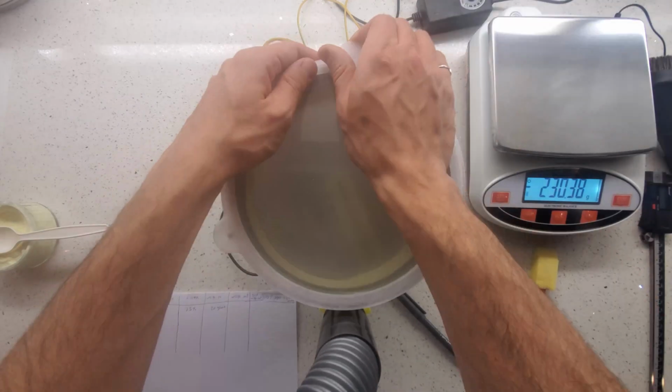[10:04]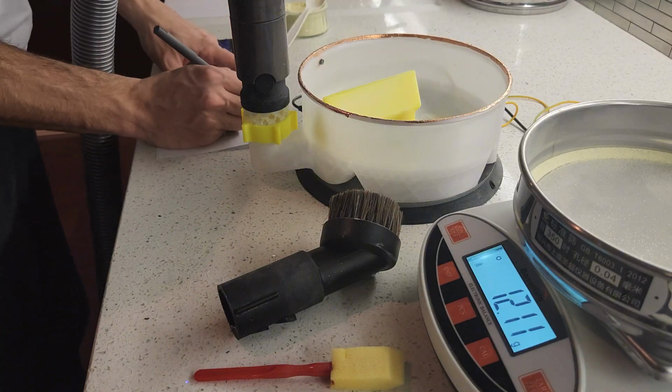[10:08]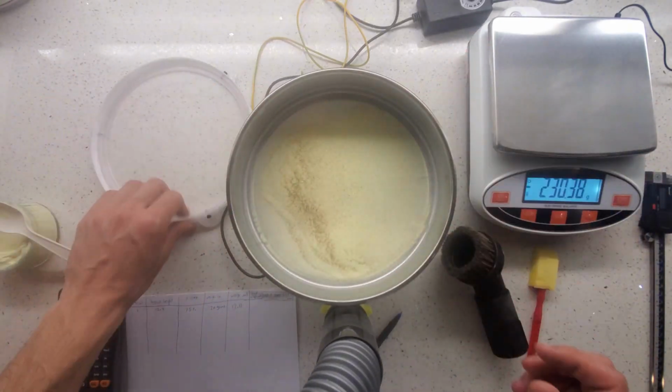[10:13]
Turn on wand motor and activate vacuum. Let the sample run for 5 minutes. Video sped up here, but you'll notice the sample is settling quickly on the edges due to a high bypass and low vacuum. Wipe material from the lid into the sieve and re-weigh it. Take note of the new weight. Rerun Airjet sieve on the remaining sample to see if output weight remains the same.
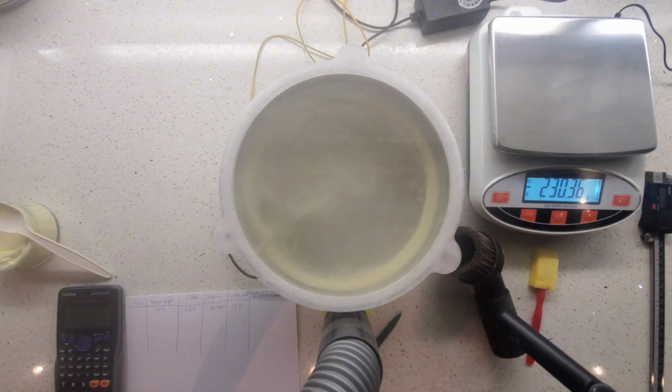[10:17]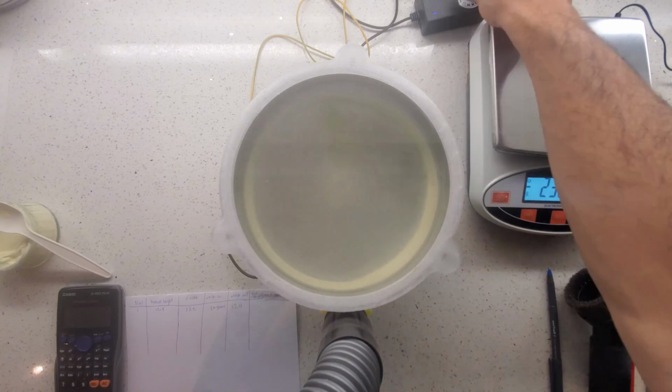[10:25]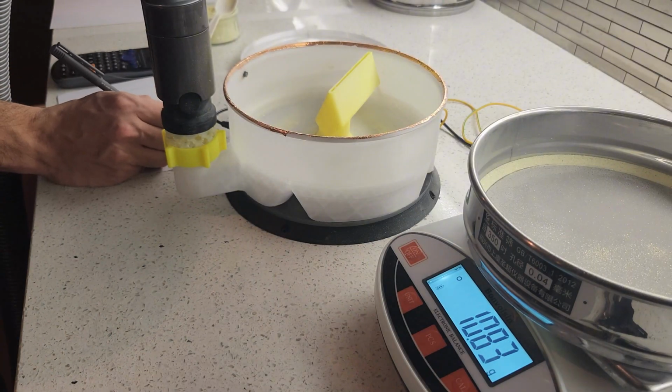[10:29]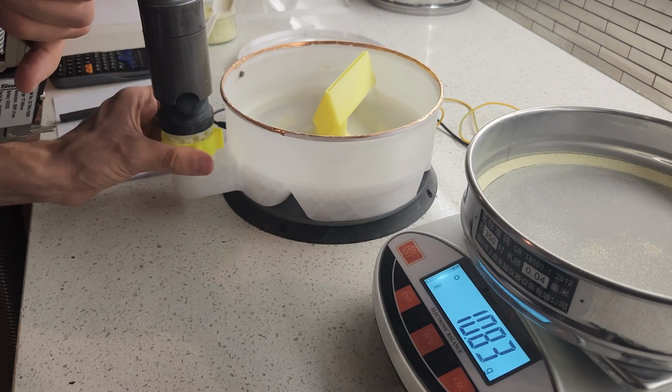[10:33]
In theory, it's ideal to use the maximum allowable bypass, which is the least amount of vacuum required that will still give repeatable results. Too low of a pressure and particles aren't passing through effectively, leading to poor repeatability. Too high of a pressure could force larger particles through the sieve, resulting in inaccurate results.
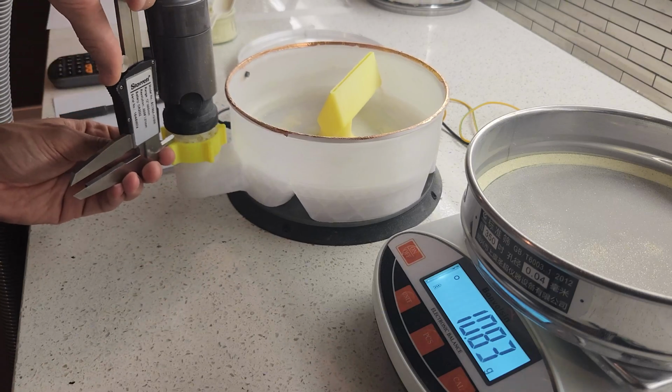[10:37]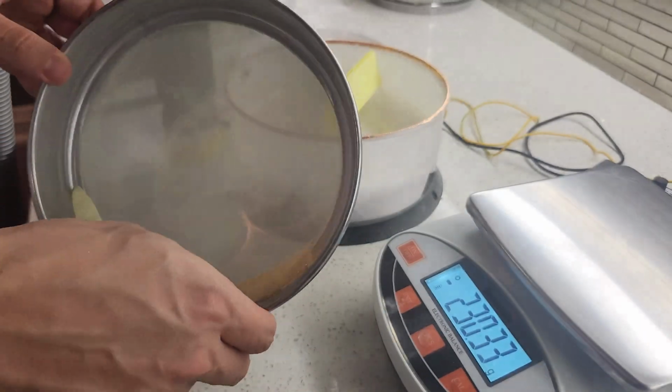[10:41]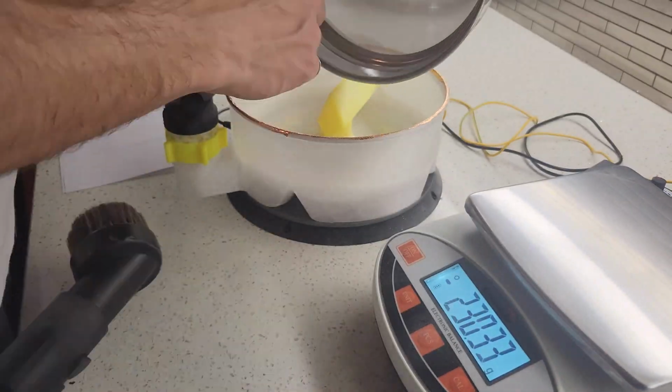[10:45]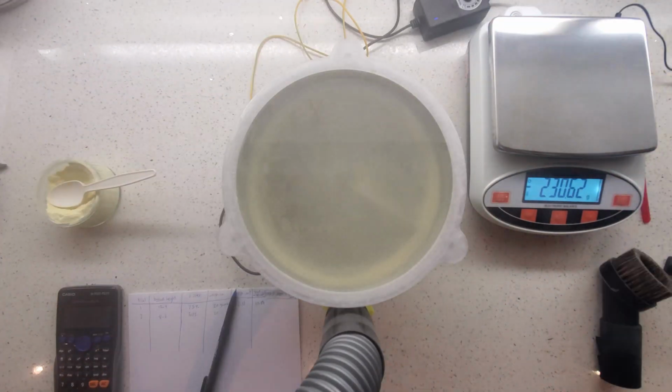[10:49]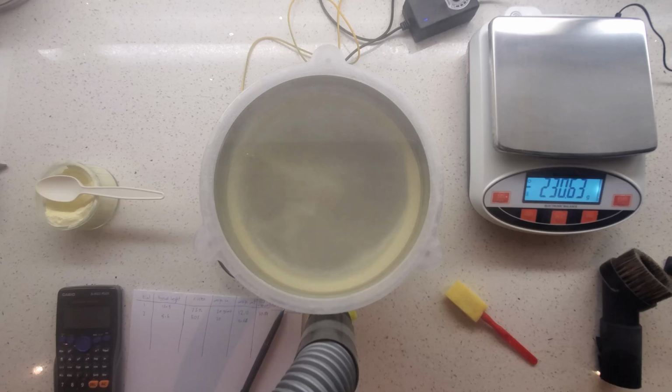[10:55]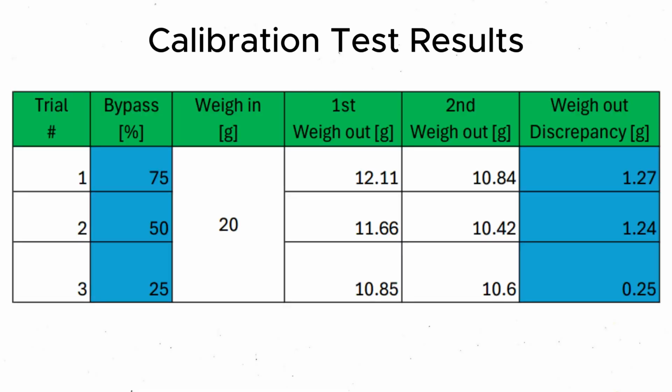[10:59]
Repeat the process for other bypass settings, making sure to clean the sieve well between samples. Not having a pressure sensor, it's important to use a cyclone vacuum or an inline cyclone unit to ensure that a certain bypass setting always produces the same suction. The calibration test results summarized in this table show that a 25% bypass had the highest repeatability.
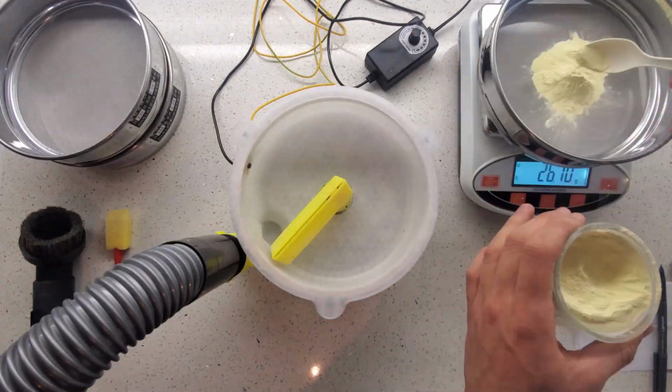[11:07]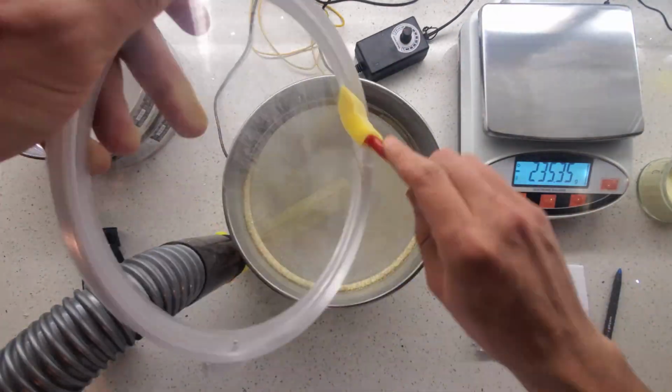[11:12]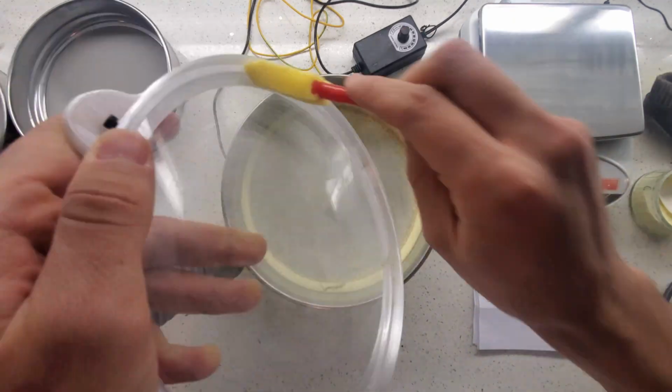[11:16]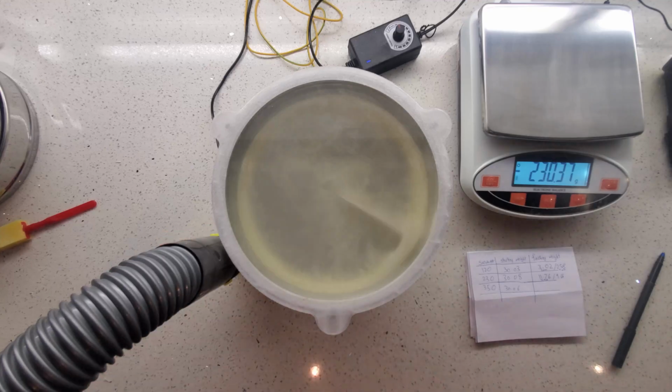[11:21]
Now that we know the ideal bypass amount from the previous calibration, we can use the Airjet sieve as intended. I tested a sample of the same powder on each of 3 different sieve sizes, following the same procedure as before to find out how much powder remains on each sieve.
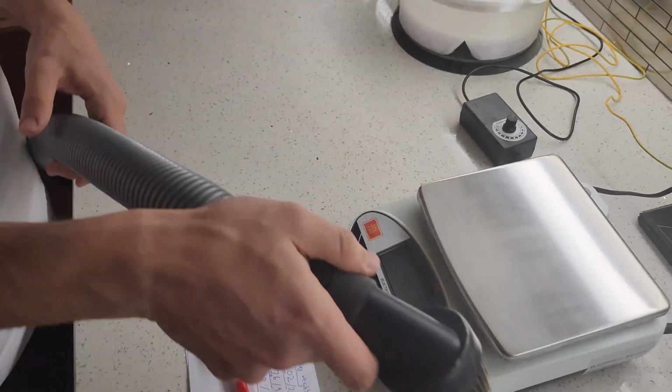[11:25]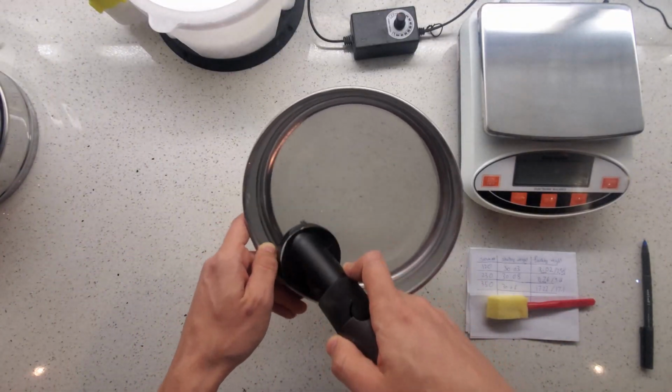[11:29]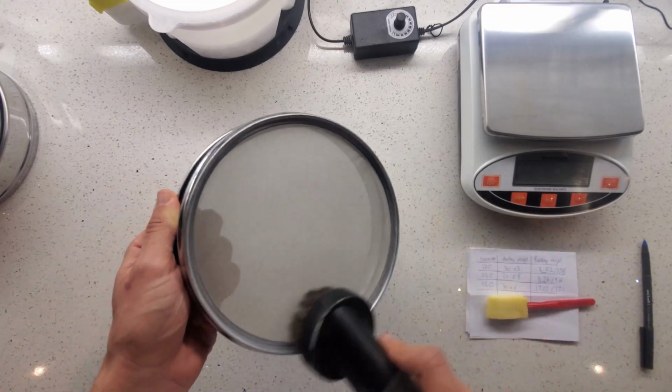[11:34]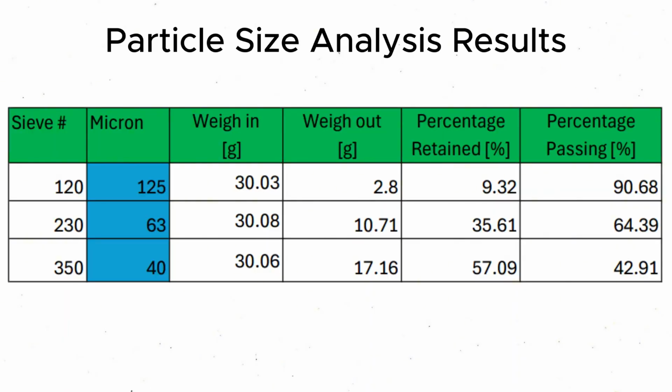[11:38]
To clean the sieves, I made an adapter for these common soft hair brushes to attach it to the Dyson vacuum directly. These brushes are soft enough to use on the sieves without damaging them, and the vacuum makes it a mess-free job. In order to use the instrument, you have to at least know a rough estimate of the range your product will fall under to procure the correct sieves.
These are the results from the test. There are many ways to format the output data depending on the standard you're following. In my case, I find it straightforward to use percentage retained and percentage passing. In this case, for example, I can calculate that about 9% of the sample is larger than 125 microns and 91% is smaller than the 125 microns.
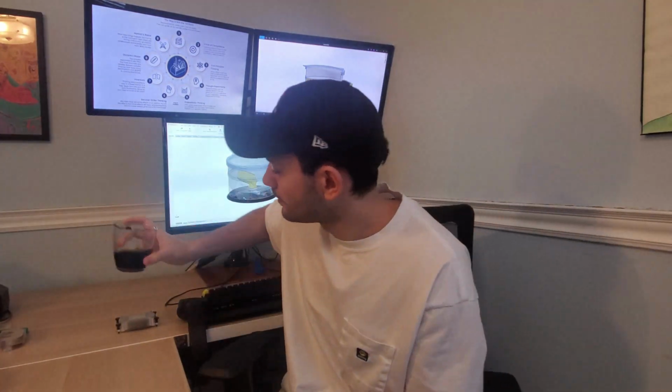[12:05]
While this model probably isn't going to be adopted by pharma labs anytime soon, I had enough of a need for it to design my own. I'm interested to see who else may have a similar need.
The model has some shortcomings when compared to commercial models, such as the lack of a pressure sensor and fine control over the wand RPM. These features may be overkill for your needs, not warranting the high cost of commercial models. My design gets me 99% of the functionality I require at a small fraction of the expense. I'm even considering building 3 more units so that I can run all 4 mesh sizes at the same time.